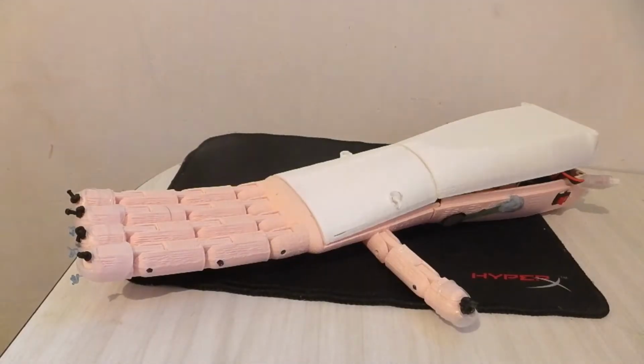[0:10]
Hello Internet. Today I'd like to go over the construction of my prosthetic hand that I've been doing as a side project. So firstly we're going to have a look at the mechanics.
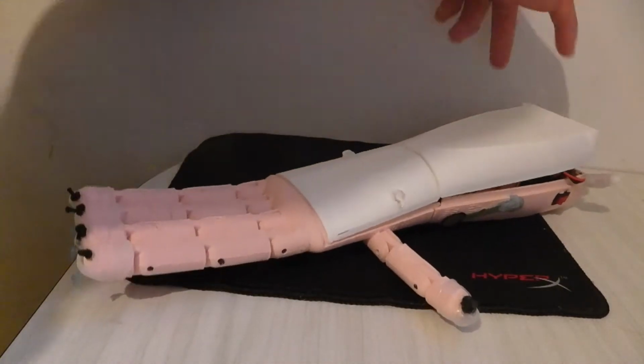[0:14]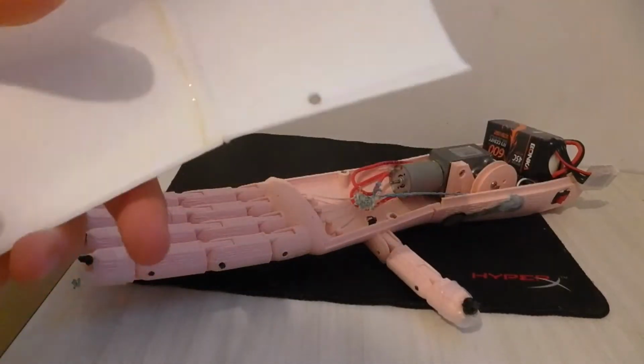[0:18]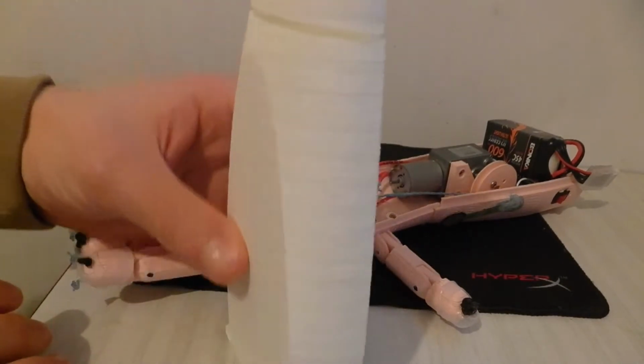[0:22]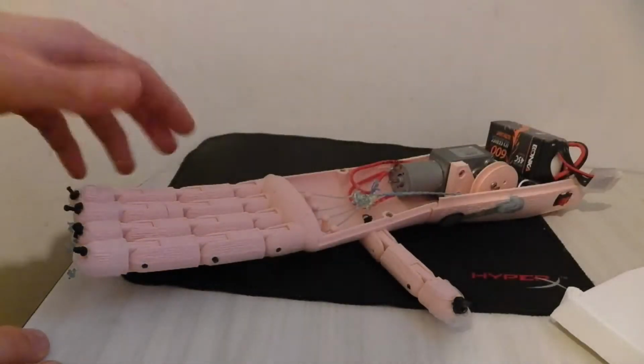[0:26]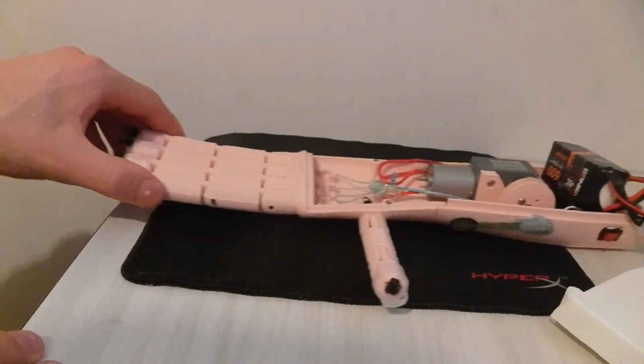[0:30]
Alright, so in terms of the mechanics, normally this lid is screwed on in 4 places. The lid itself is just glued together, 2 3D printed pieces. It's designed to be printed upright, no supports. Inside the hand we've got 2 main parts, the body and the fingers here.
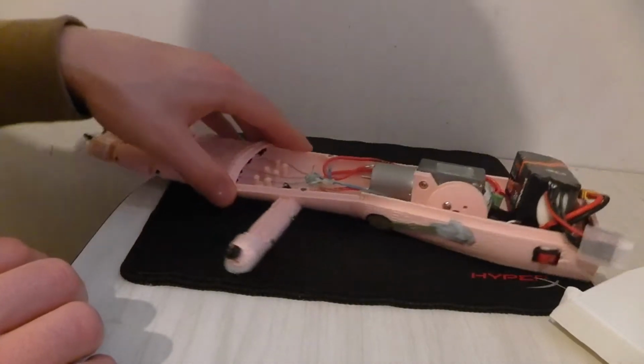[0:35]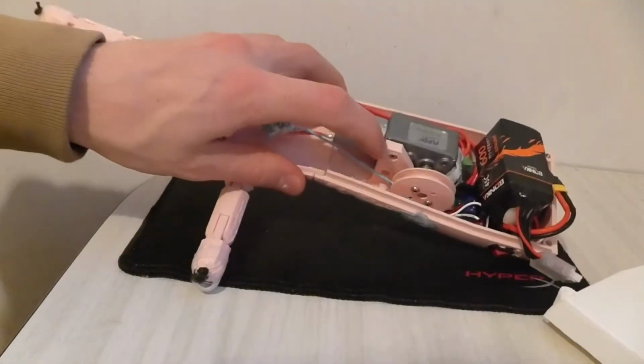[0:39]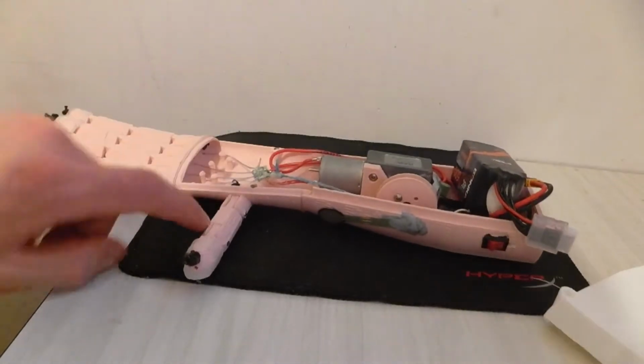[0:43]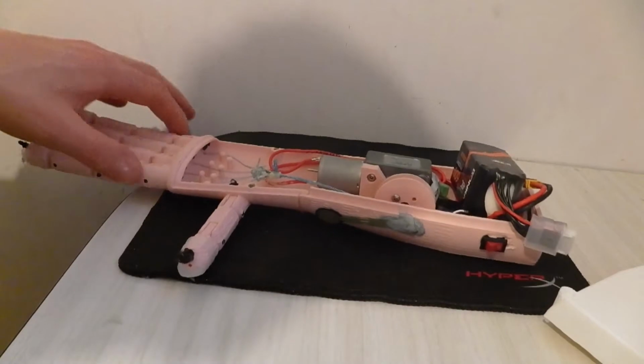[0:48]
Now we'll probably start with the body, that's the simplest. That's just a nice shell. It's got this motor holder here in it. It's got some holes. There's a hole here to help you with assembly. And then these finger stubs here which lead to the fingers.
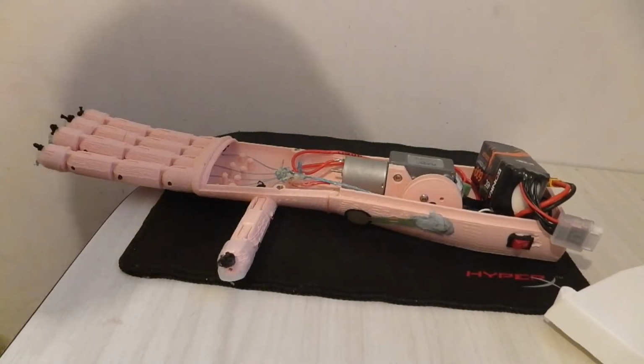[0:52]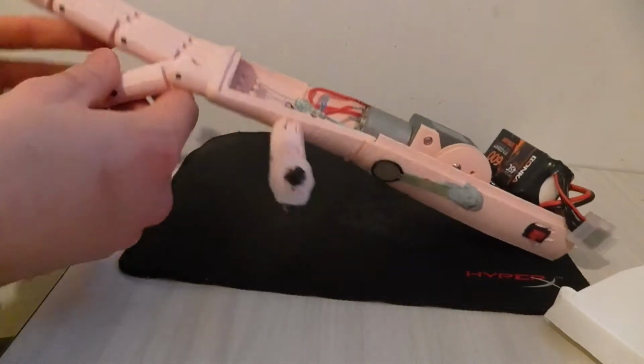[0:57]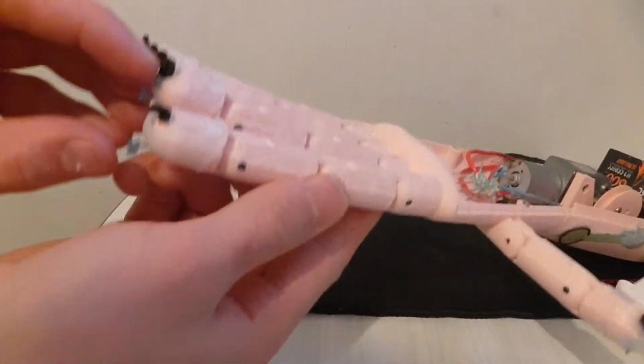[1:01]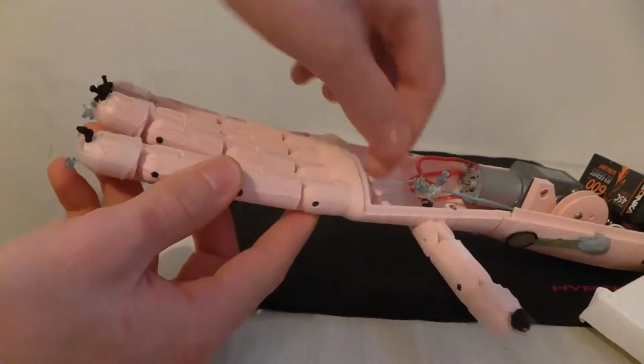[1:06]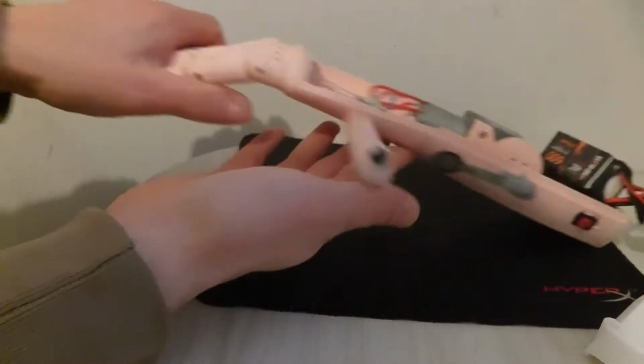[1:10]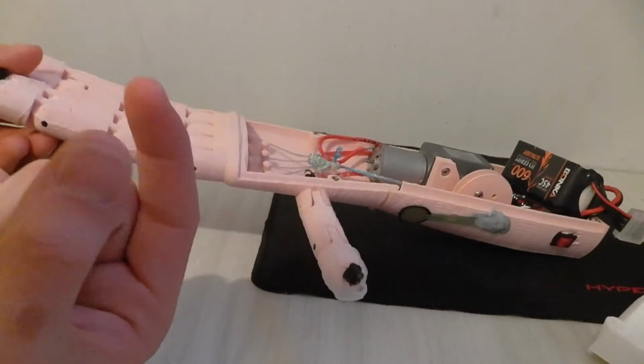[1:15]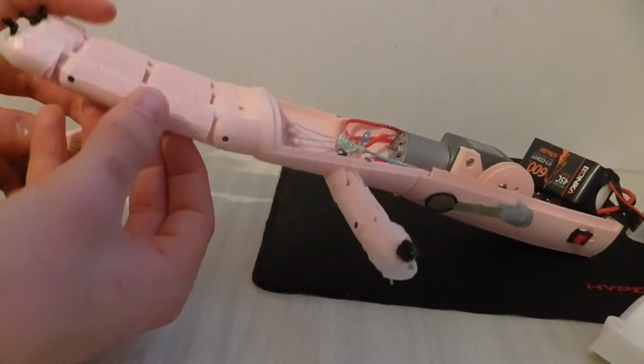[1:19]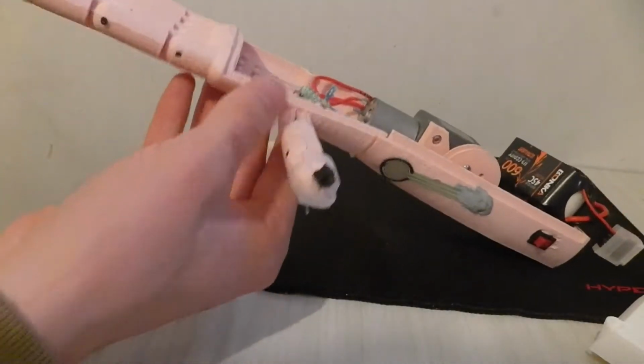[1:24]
Now mechanically the fingers have 3 joints with a piece of elastic going through the top. It's just elastic cord, and to the other side here, you can see in there. The joints are actually just 3mm holes with 3mm 3D printer filament pushed through. You can see here, and that works really well actually. It's quite easy assembly, and the elastic keeps the finger straight.
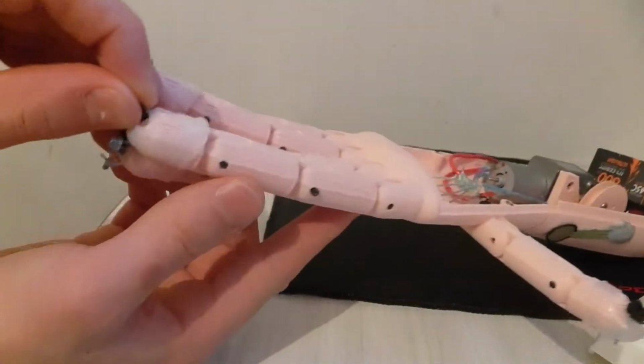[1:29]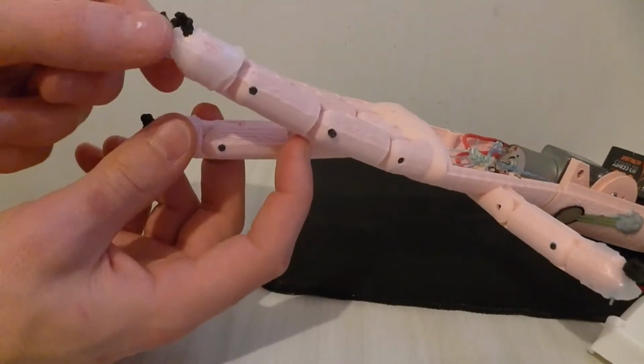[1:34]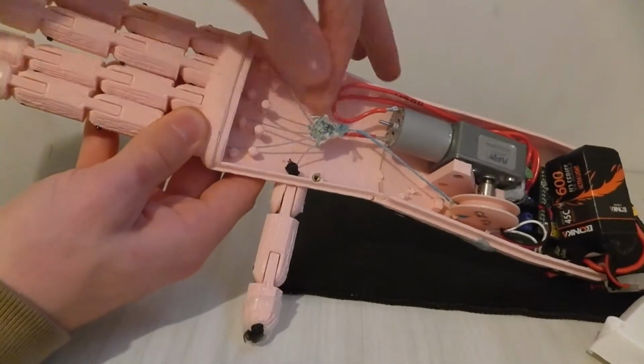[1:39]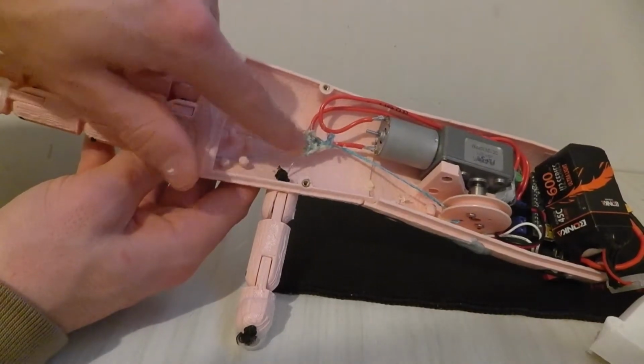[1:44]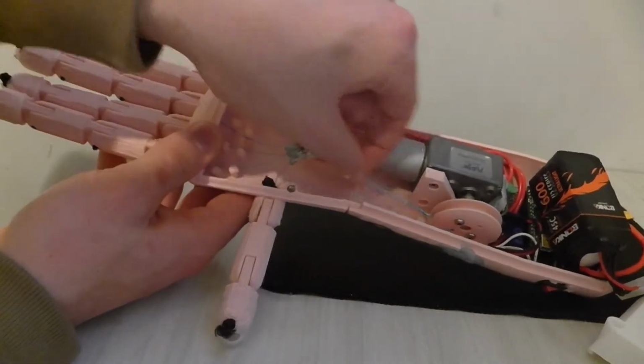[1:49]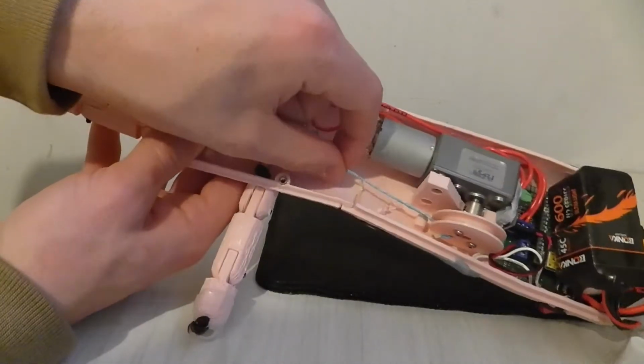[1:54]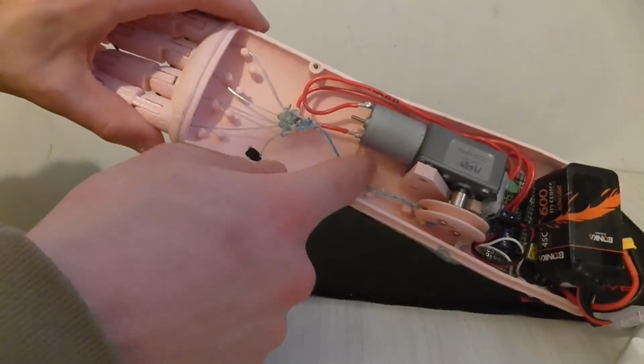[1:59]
So this elastic goes over the top of the pin joint, and then below it is another hole all the way through the finger with fishing line. These fishing lines go all the way through, and they all connect at a central nut here which has got glue on it to stop the fishing line from slipping. We have the 4 or 5 fishing lines connected to the nut, connected to another piece of fishing line. This is braided fishing line. It has to be braided to be stronger because this has 5 times the force of these fishing lines here.
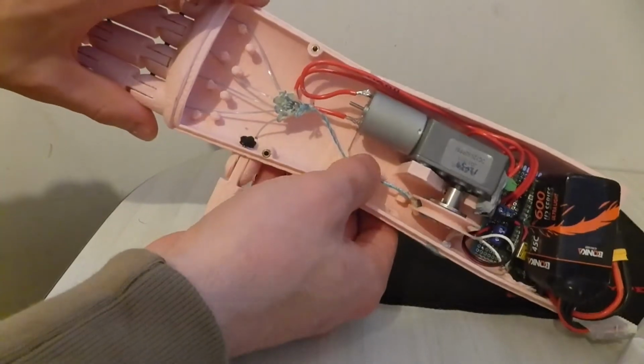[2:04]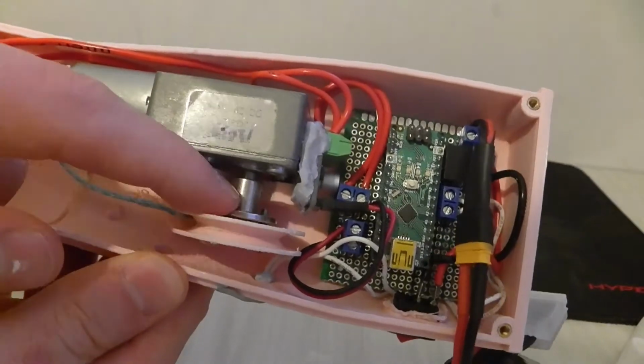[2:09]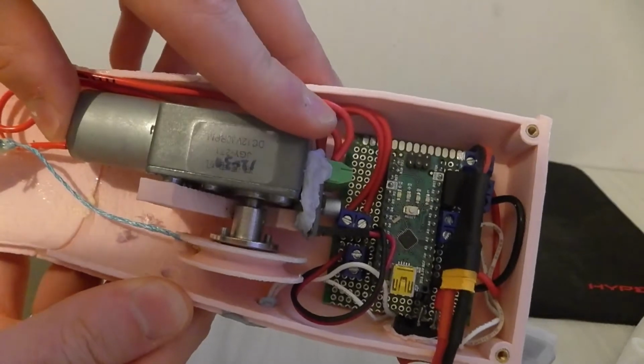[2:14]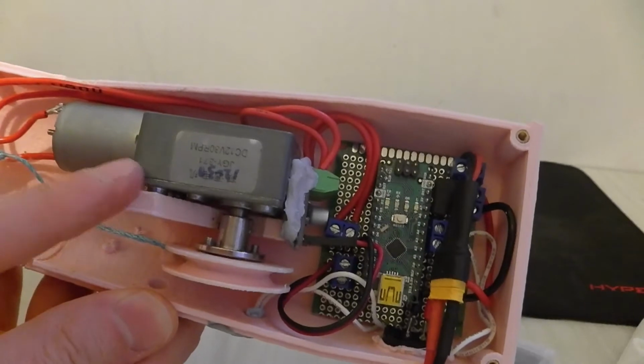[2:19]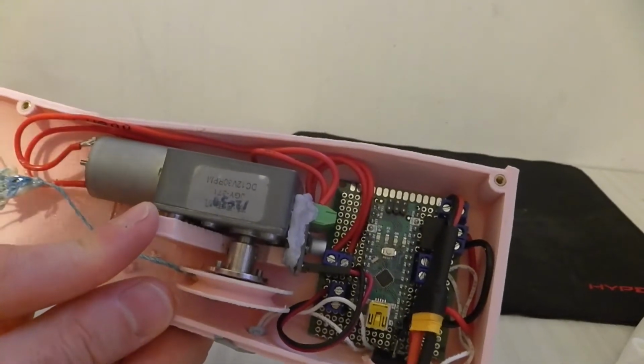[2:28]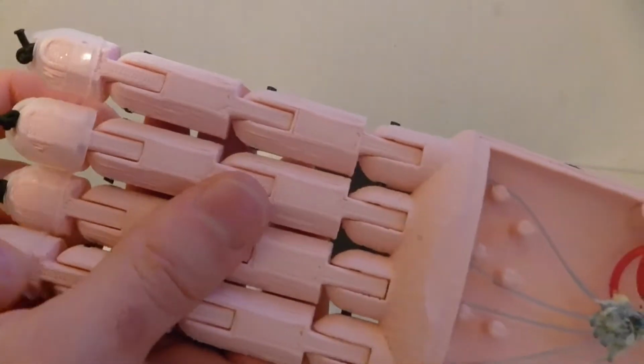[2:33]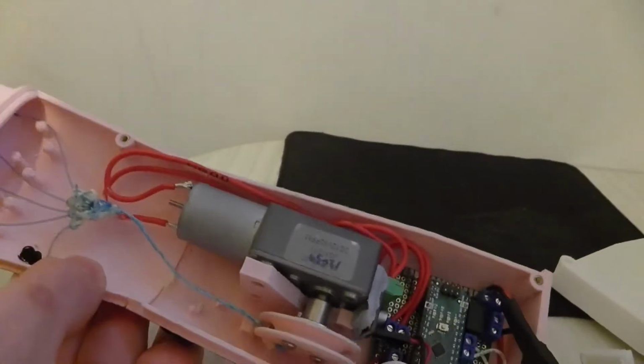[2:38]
That goes into a pulley which is connected to a coupling which is connected to the shaft of a high power worm gear drive motor. This is a 12 volt DC worm gear drive that runs at 30 RPM, but we're actually running it at 24 volts to get more power. And as you'll see at the end, this gives the hand a lot of grip, including the rubber fingertips it's got on it. It performs really well. Now that's probably all the mechanics.
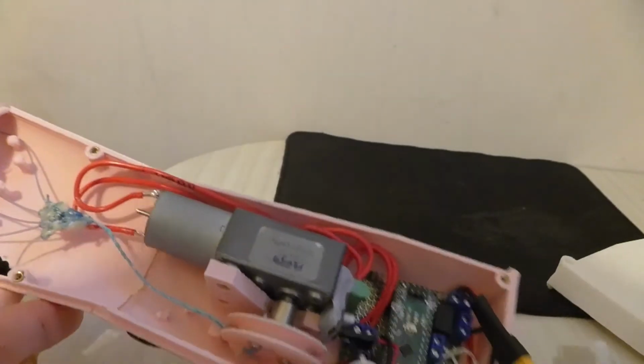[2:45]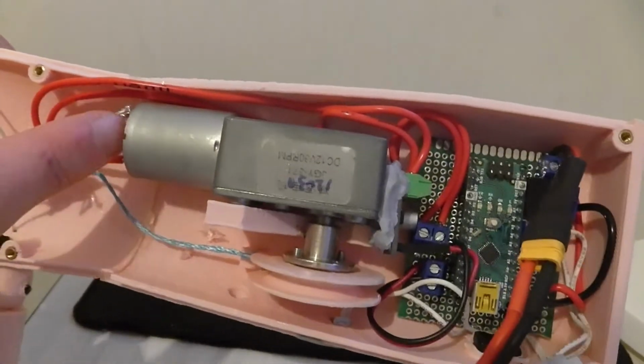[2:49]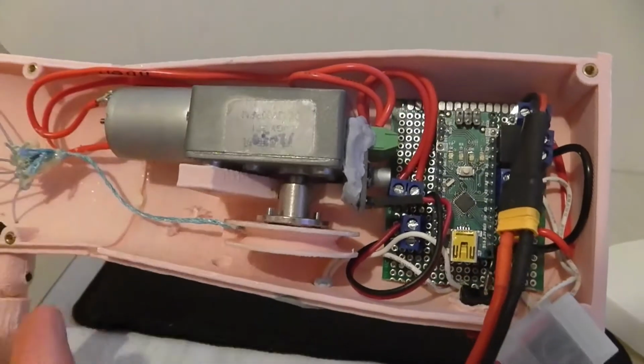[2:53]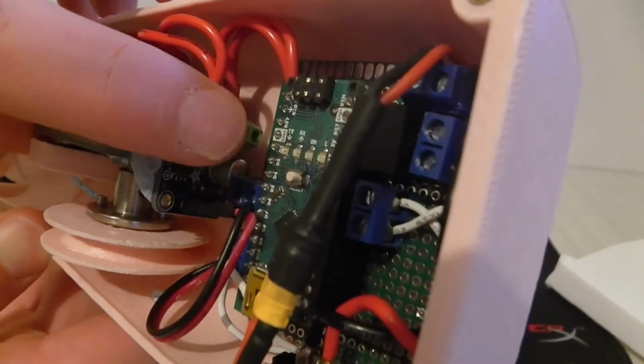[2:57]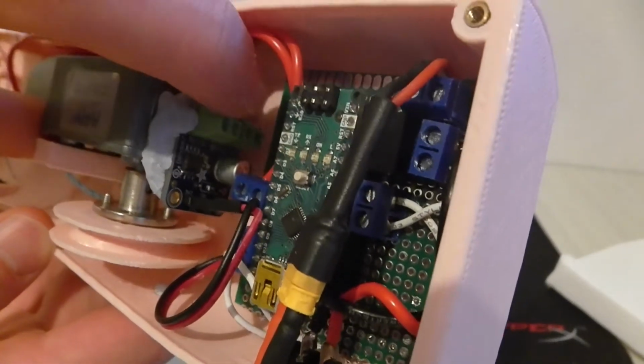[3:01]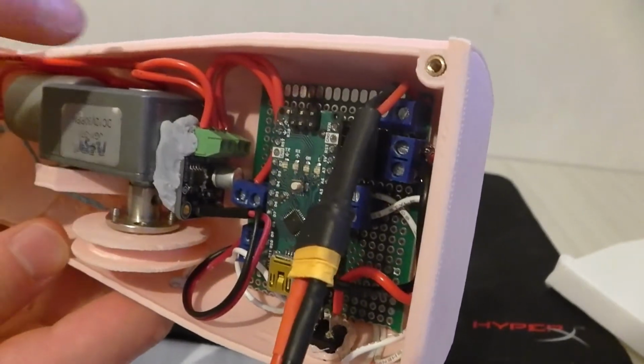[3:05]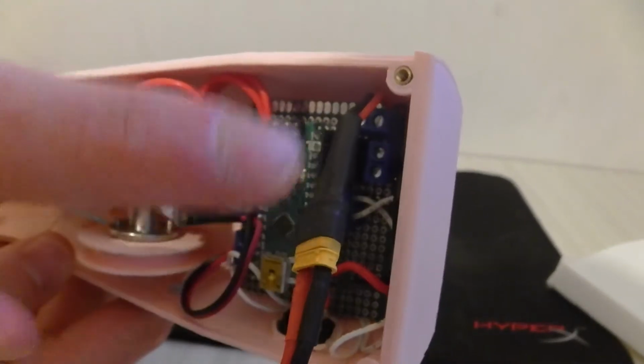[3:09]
I guess we'll go and have a look at the electronics now and how the electronic circuit works. Alright, so picking back up with the electronics, you can see that we've got the 2 wires from the motor that come and wrap around here, and these go into the PWM driver. This motor driver here is controlled by PWM signals that come from the Arduino, but it actually takes its power straight from the 24 volts.
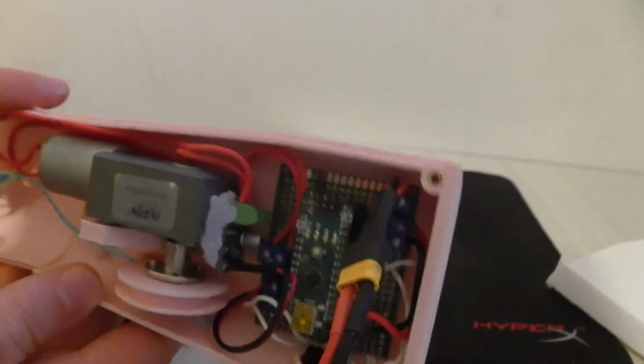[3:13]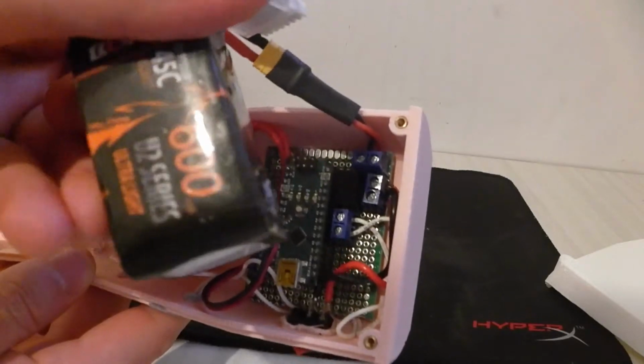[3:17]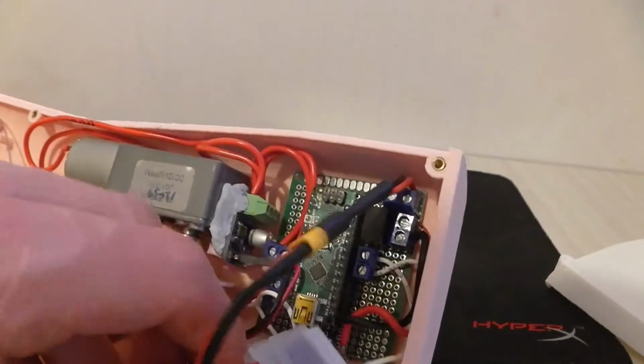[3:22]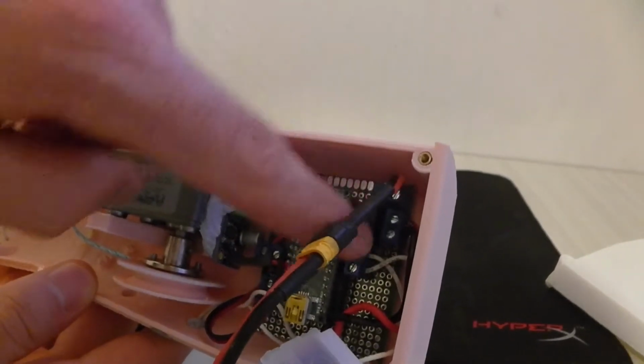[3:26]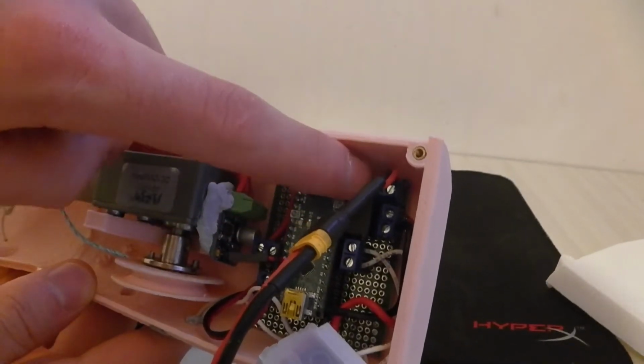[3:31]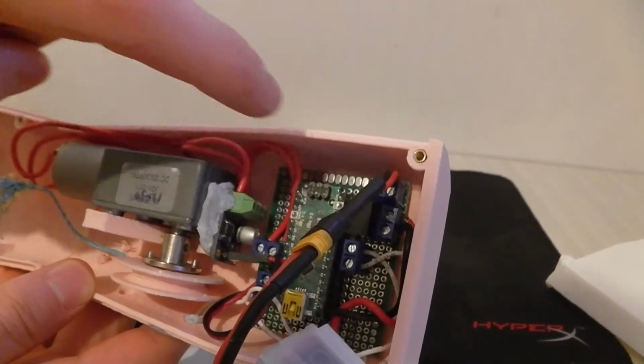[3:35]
So this motor is running on 24 volts. So this is a 24 volt battery, by the way. Nice small compact 24 volts, 600 milliamp hour. So the 24 volts comes into the circuit here. 24 volts goes to the driver, but we also have a 5 volt regulator here, and that regulates power for the Arduino, and the Arduino also gives that 5 volts in the form of PWM to the motor driver.
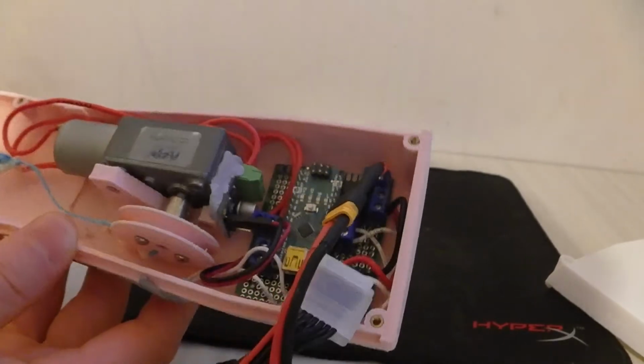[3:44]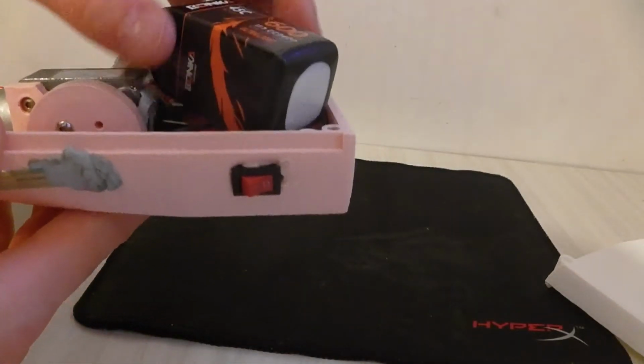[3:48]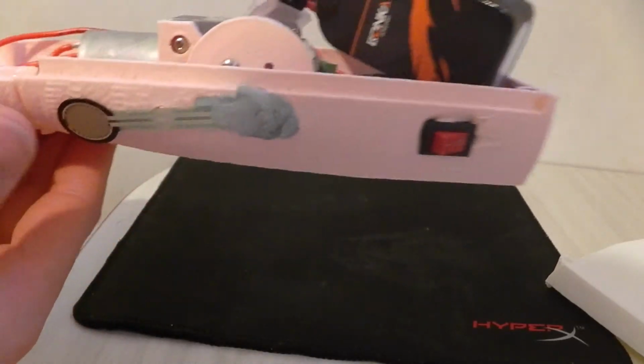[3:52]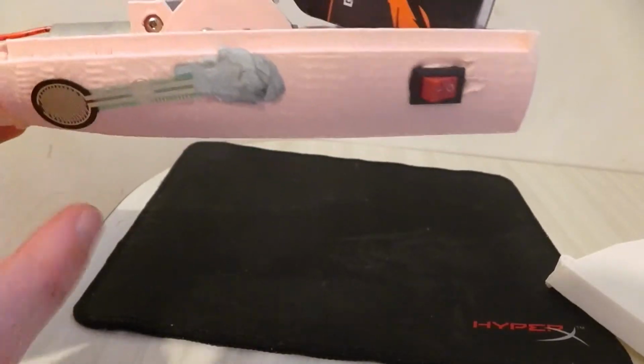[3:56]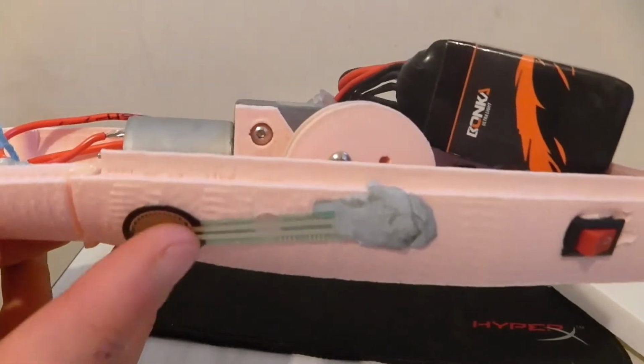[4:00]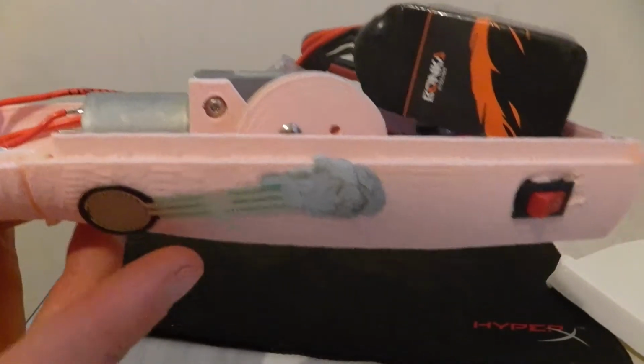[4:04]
Now to control the whole circuit, we have an on-off switch here which just literally switches the battery completely on, completely off. And we also have this force sensing resistor which talks to the Arduino. So this is used in combination with a pull down resistor, so when you press this, the Arduino knows to close and open the hand.
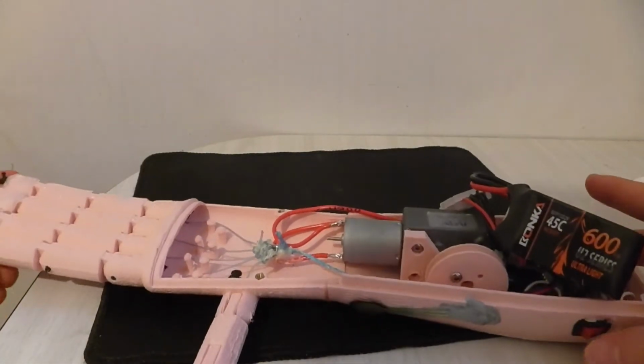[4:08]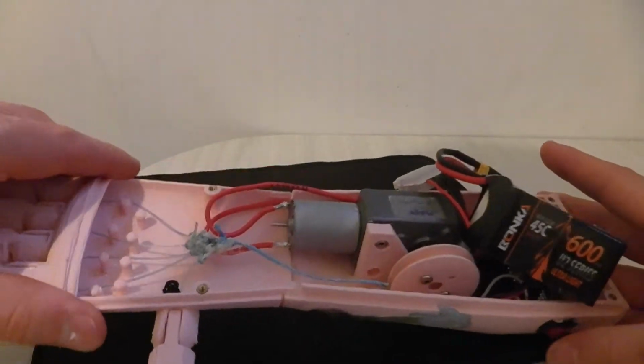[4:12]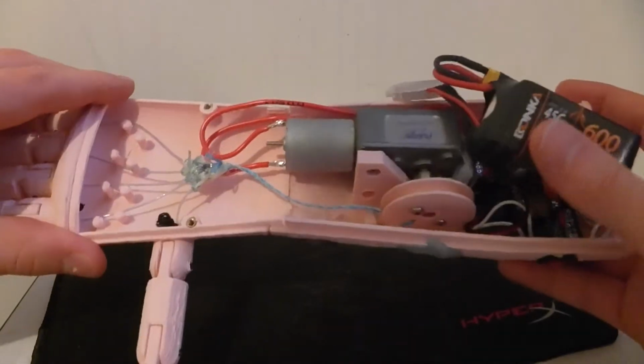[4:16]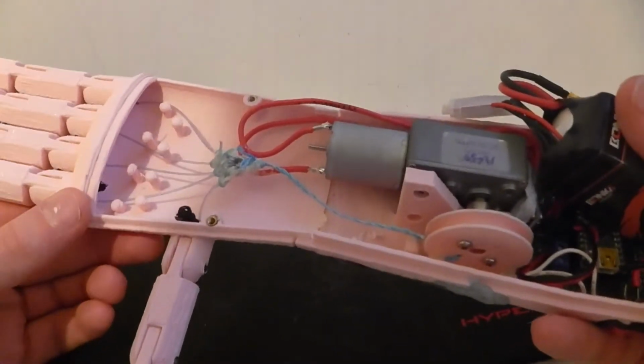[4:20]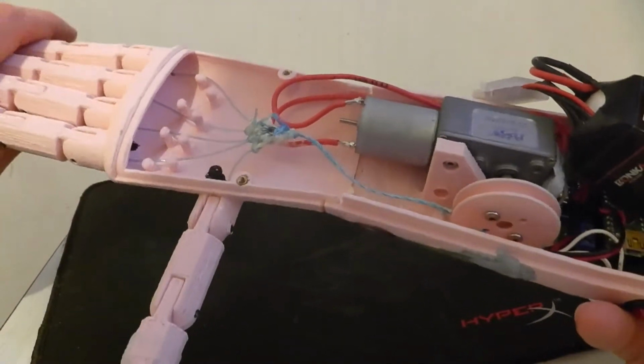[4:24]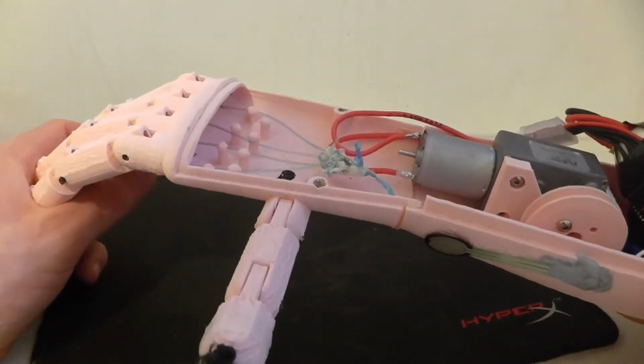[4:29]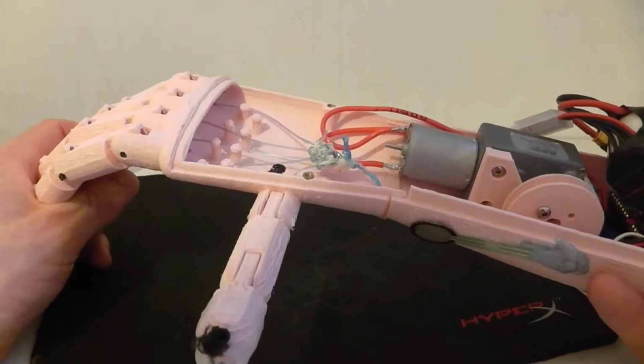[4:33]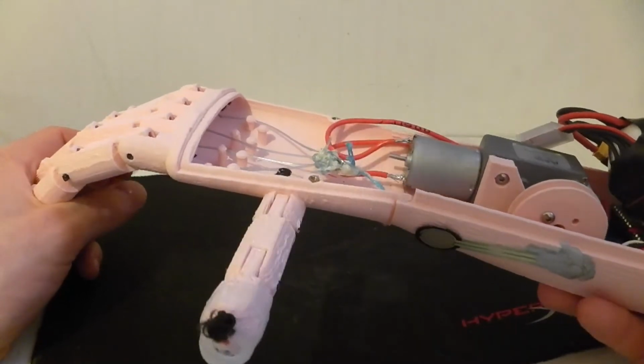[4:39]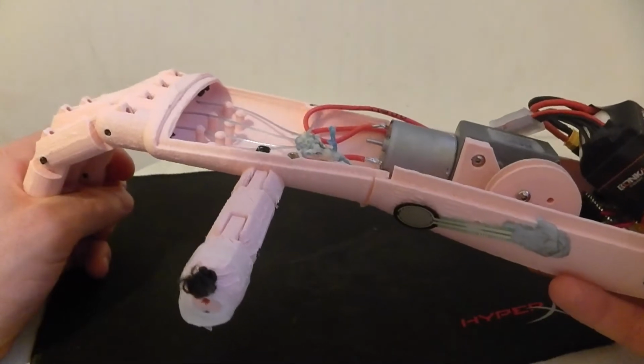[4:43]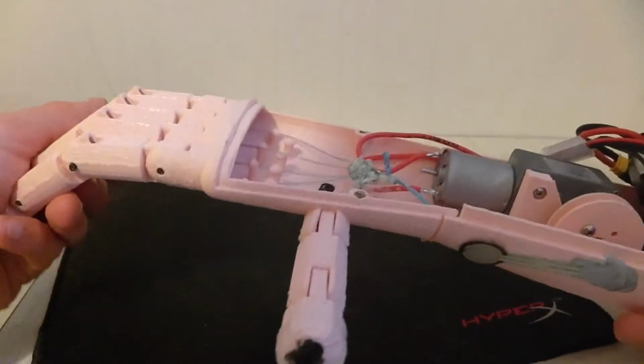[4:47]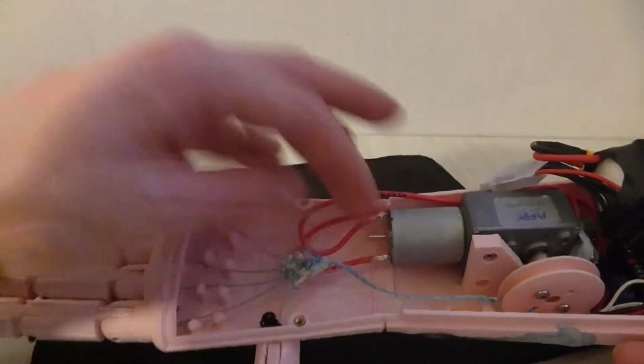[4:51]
Alright, and now in terms of its actual operation, what happens is, to keep everything in sync, when it turns on, it'll fully close the hand as far as it can go, and then it closes on a timing sequence, so it just knows how long it takes to close. So if the hand is stopped before that, it'll just keep trying to close, and then what will happen is the motor driver will switch off power completely to the motor, but because it's a worm gear drive, it will actually hold that tension. And then what happens is, in the opening sequence, it then opens the correct amount to be fully open, so the pulley will be sitting at the right spot, and then these elastics will hold the fingers straight out.
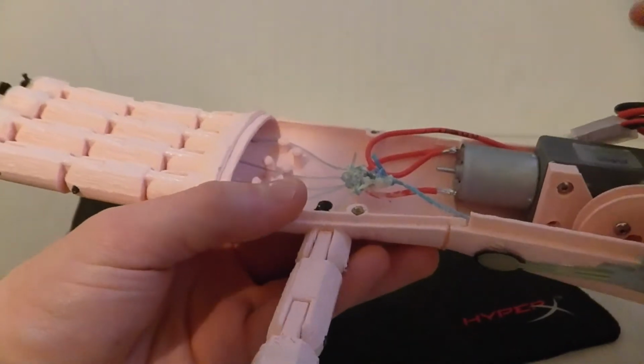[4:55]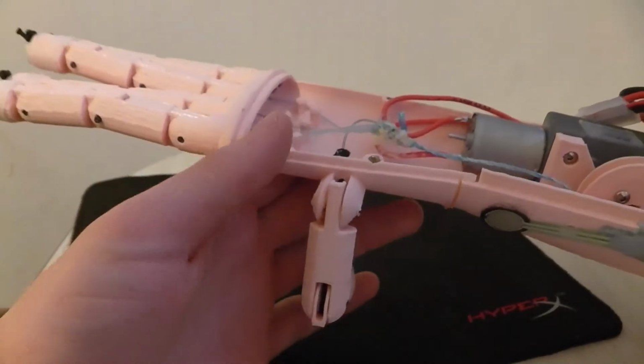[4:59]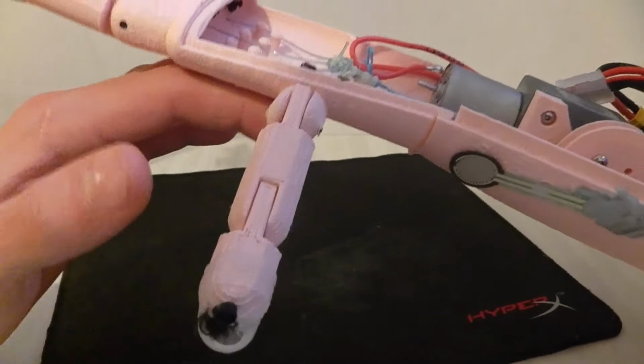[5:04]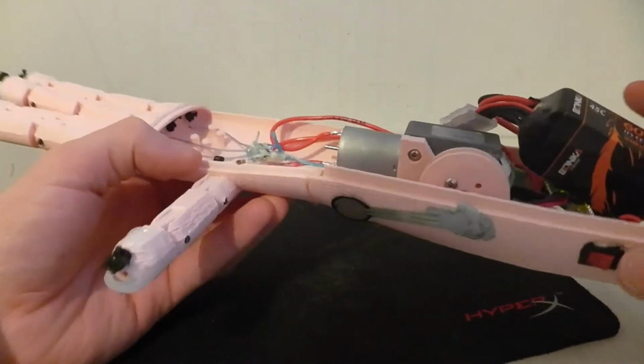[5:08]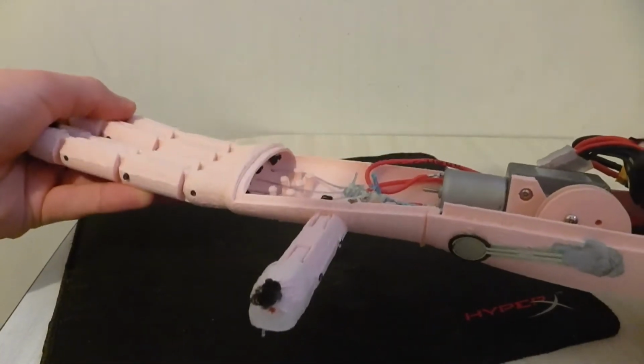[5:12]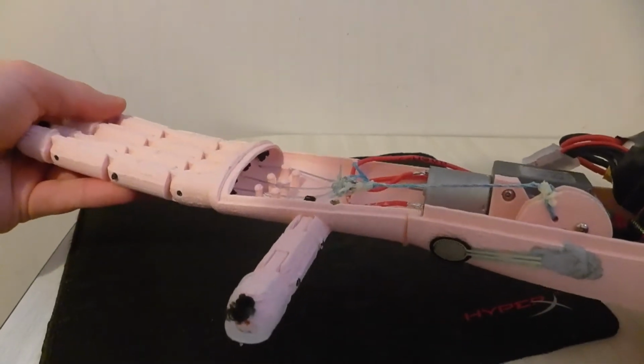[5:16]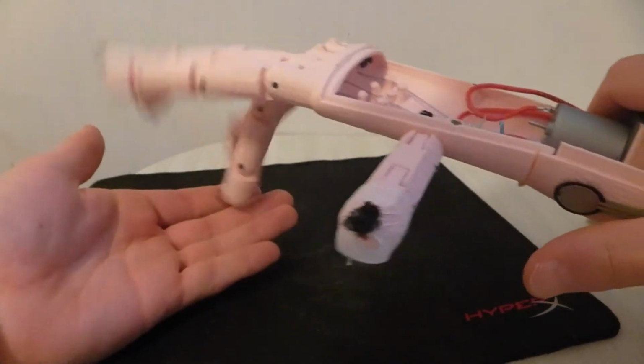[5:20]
So I'll just show you that now. The thumb right now, the elastic's not strong enough to pull it back, so you'll just see the thumb hanging around. But yeah, that should be easy to fix. And I'll just show you that again with holding the fingers closed. Oh, open, sorry. Yep. And then each time I press it, it just goes in and out.
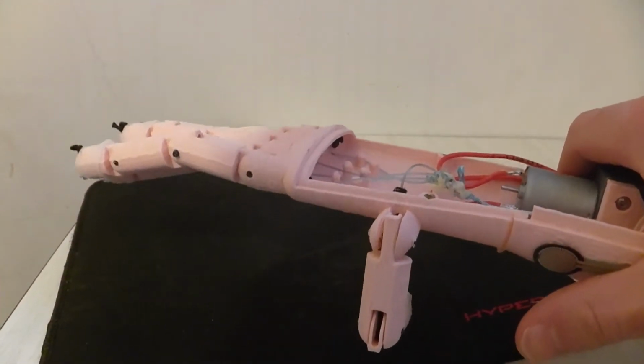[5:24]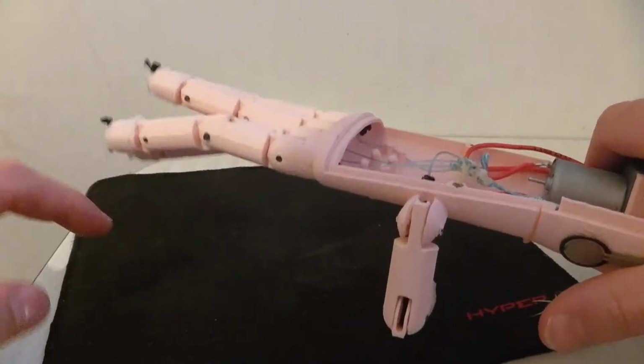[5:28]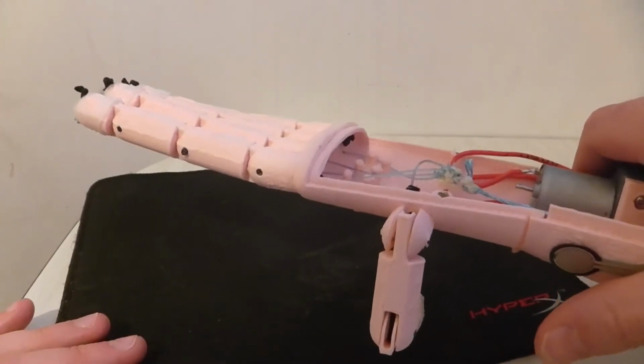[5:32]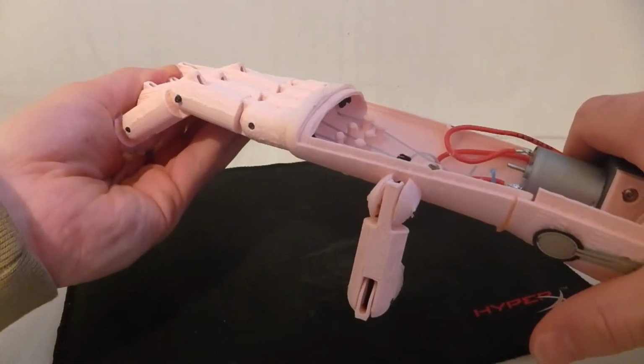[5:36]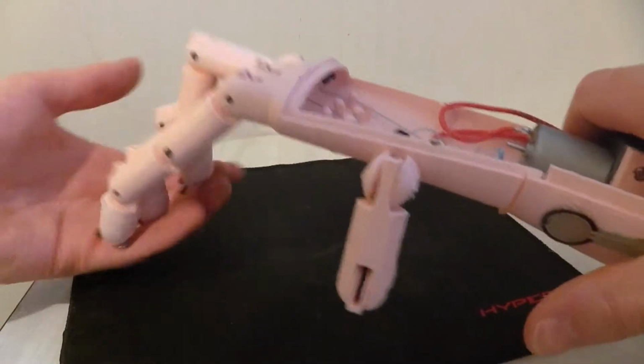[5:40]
And the reason it will never go out of sync is because it closes for about twice as long as the timing for it to open. So it'll always get to a point where it's just stopped and forced, and then it will just release and you press it again. But yeah, the beauty of this system is it requires no power to hold this grip now.
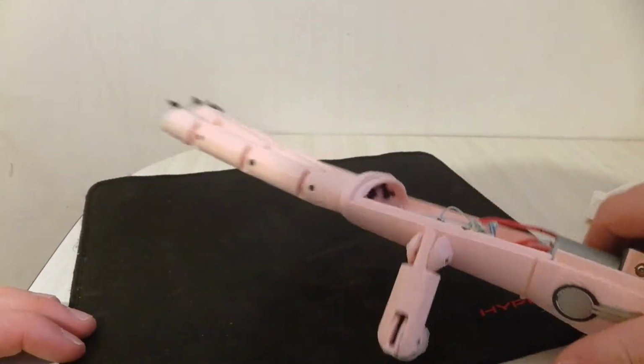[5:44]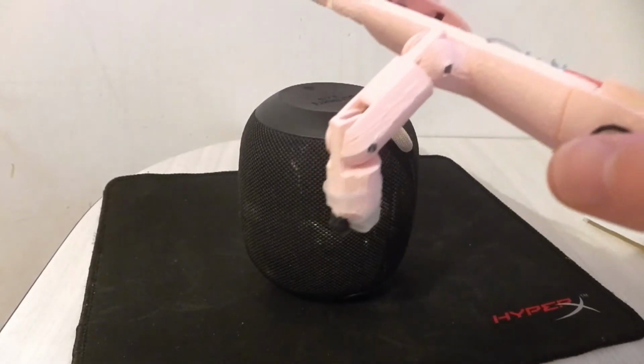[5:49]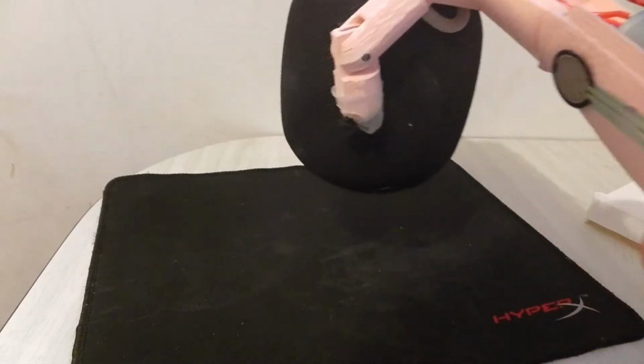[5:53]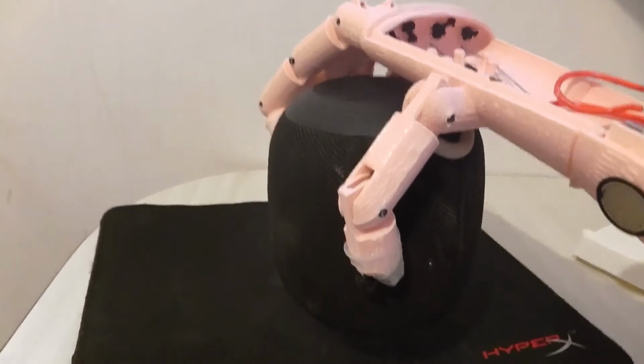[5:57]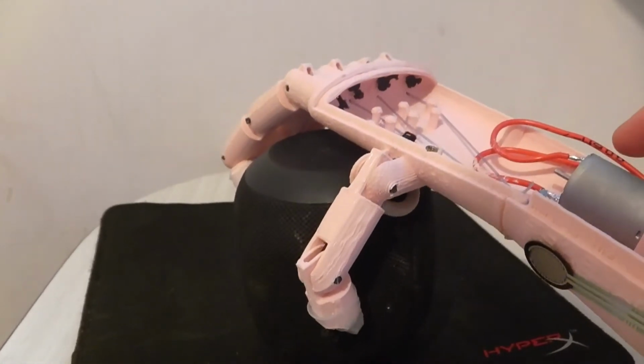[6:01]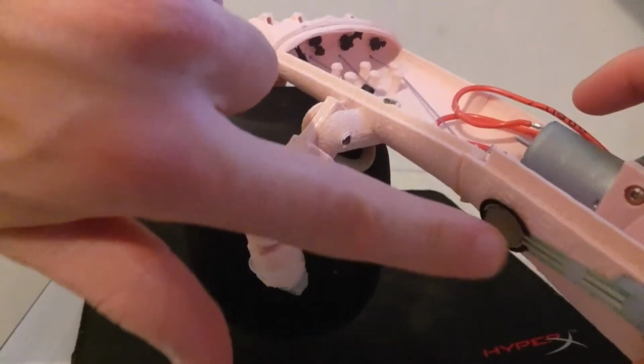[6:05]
Yeah, so I'll just show you picking up this speaker here. And yep, now it's locked on, that's it. It just requires no power to hold this all day, which is just the beauty of the worm gear drive. It won't be driven backwards. It can only be driven from the input, which is only controlled by the electronics. To drop it, just hit this button, and we're good.
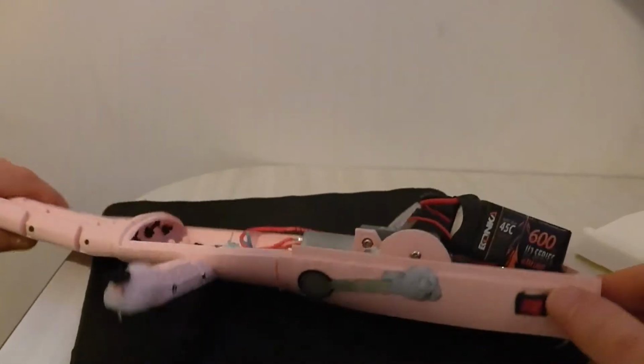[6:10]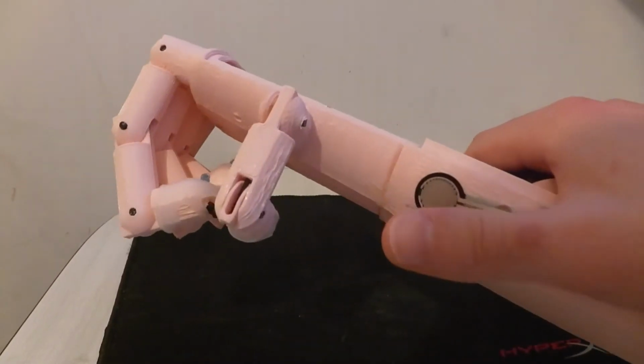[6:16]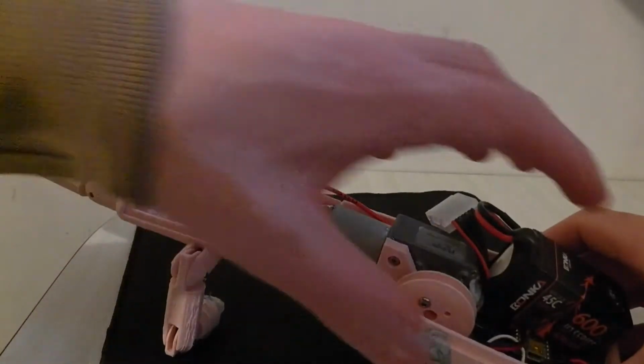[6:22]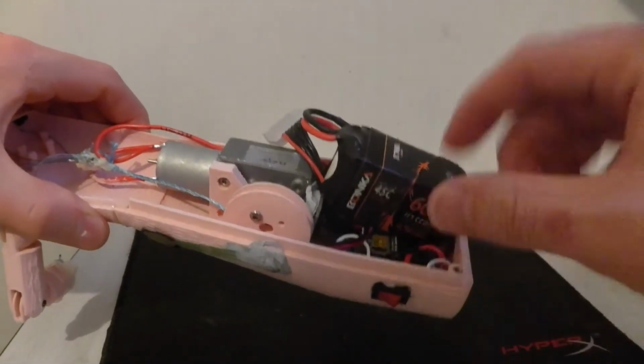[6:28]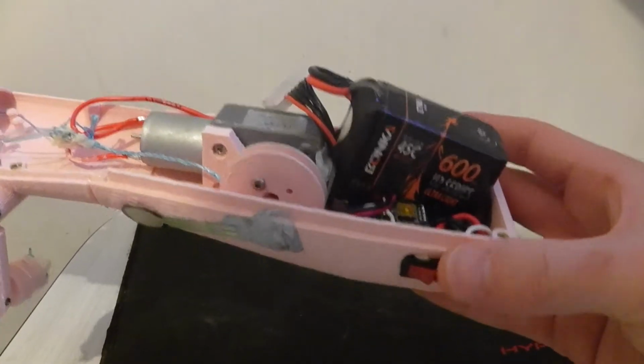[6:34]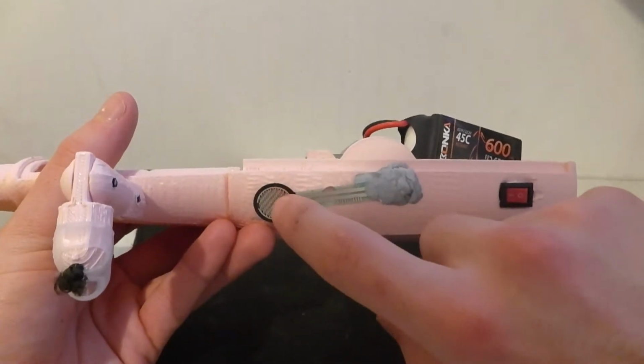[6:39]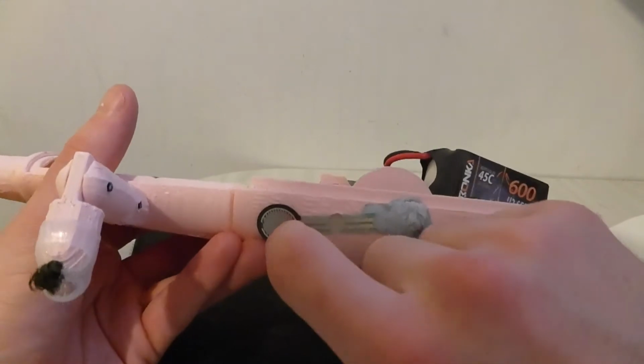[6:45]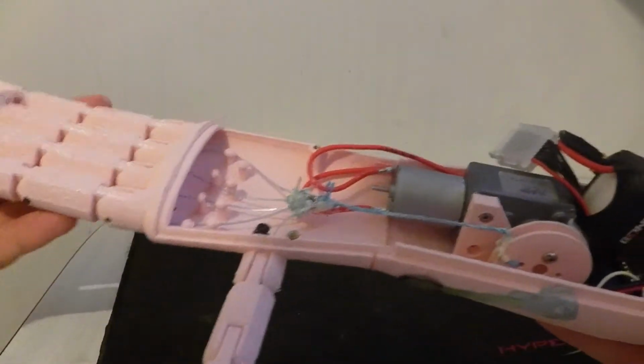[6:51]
And just one thing I wanted to mention with the force sensing resistor, you'll see me holding the hand and touching it like this to use the hand. But in actual fact, if this was used in a real prosthetic, the goal would be to move as much of this electronics and motor up into the hand to leave space for another piece, which would be basically the interface between the plastic hand and the person using the prosthetic. And this would slip between that plastic interface and their arm, and the hand would actually be controlled by them flexing their forearm muscle, which would put pressure on this, and you can see it's very sensitive, and that would operate the hand. So it would be very natural control.
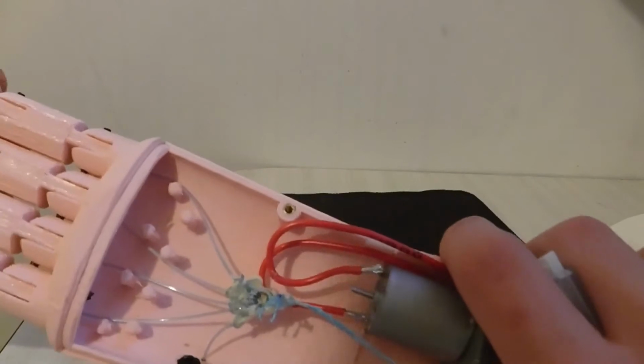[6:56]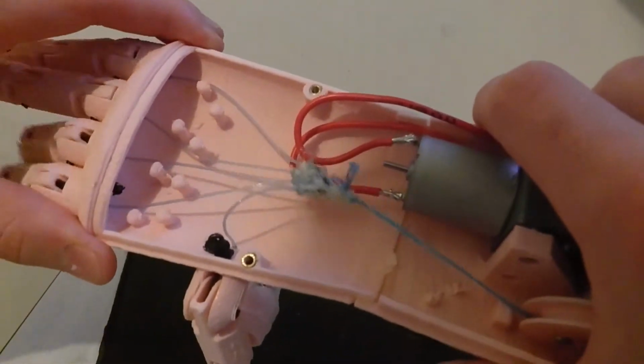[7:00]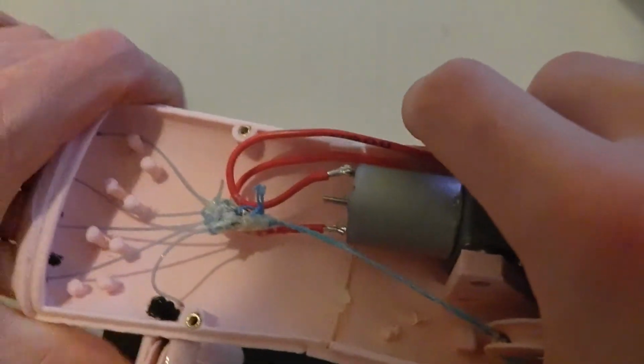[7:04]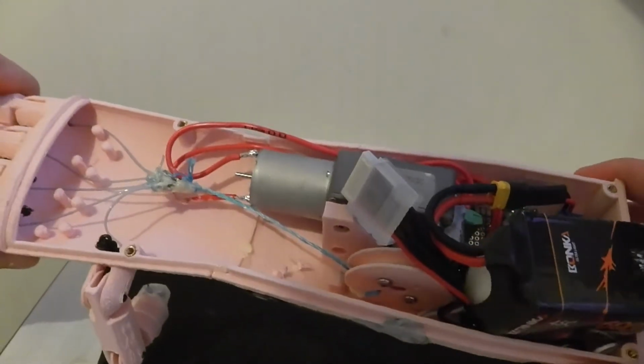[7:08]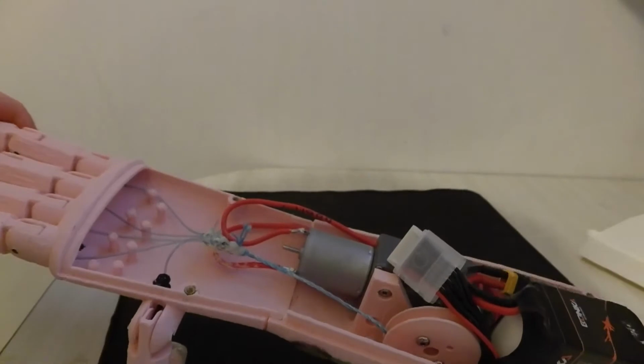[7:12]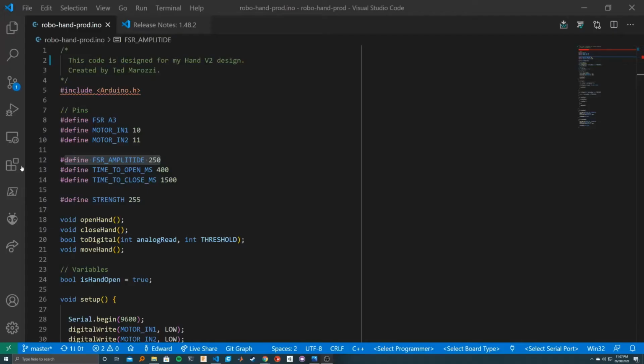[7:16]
And I'll just give you a close-up of the fishing line closing. And that just holds that, and then yeah, so it's turned out to be a very reliable system. I'm very happy with it. The last thing to go over is the software, so we'll have a look at that, and then I'll give you some things I would improve for the hand, and if I made another version.
Alright, we'll just go over the code now. It's only 80 lines, nice and simple code. We have 3 defines here to define our pins. We have a FSR amplitude define, which determines how much force is needed when you press the force sensing resistor to close the hand. We've got how long it takes to open the hand, how long it takes to close, and the strength of the hand, which is an integer from 0 to 255. So it's currently set at the maximum strength, which you could set to any strength you like.
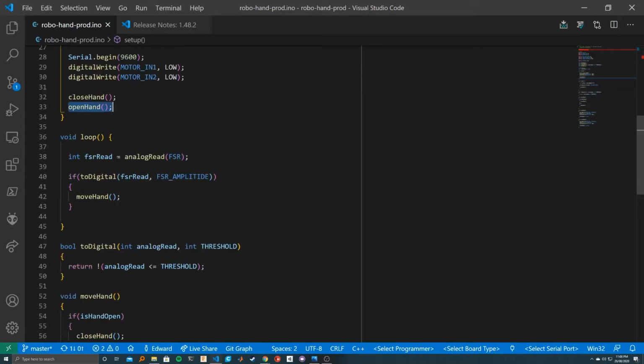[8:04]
We've got our functions here and a bool that tracks whether the hand is open or closed at the moment. So in the setup, we set our 2 motors to low just to start the process, and then we close the hand, and then we open the hand, and that's part of the calibration process. In the loop here, we read the value of the force sensing resistor. We take that to a function that determines basically whether the force sensing resistor is lower or greater than the amplitude that we set here. That's why it's called to digital, because it just converts this analog signal to a 0 or a 1, depending on which amplitude you put in, and you can see that here. And then if the FSR value is greater than the amplitude that you set here, it will move the hand.
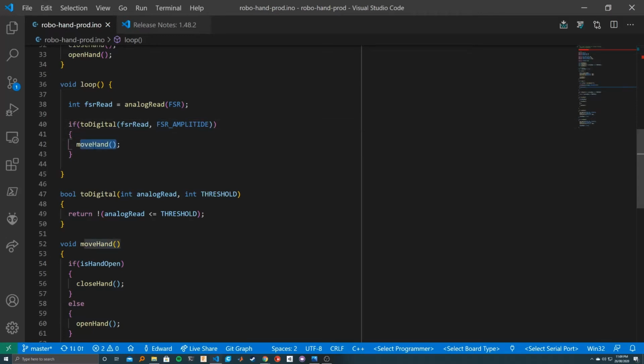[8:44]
Now, what does moveHand do? Very simple function. If the hand is open, we close the hand. If the hand is not open, then we must open it. To open and close the hand, I guess this is where the meat of the code is. All you have to do is analog write to whichever motor pin gives you the open direction. You open it with full strength. You have to wait for the time to open, and this will continue to open the motor during the delay. And then you set the motor low, and then you tell the hand that it is in fact open. And close hand is very similar, except it's the other pin, and it's time to close, and then you have to tell the hand it is closed. Yeah, so very simple code, that's all actually.
Alright, I hope that little walkthrough was informative. I'm just going to go over some things I would change now. This is the second version of the hand I've made, but if I was to make another one, which I probably won't, I probably would, a few things I would just optimize a little bit. See the fingers bend back a bit. It's because I gave the joints a bit of a tolerance, because I thought that the fit wouldn't be so good, I guess, but it turns out they actually bend up a bit, and that's kind of annoying to look at.
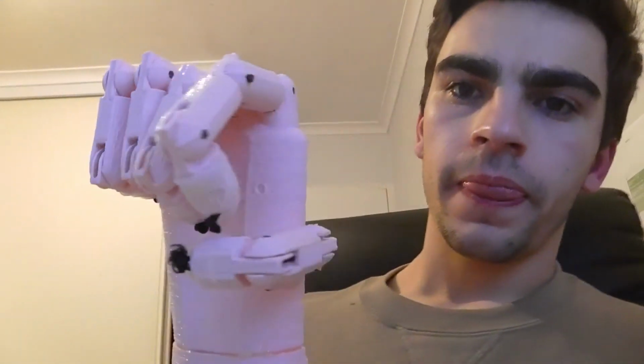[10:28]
Another thing I would change is I would make the thumb actually opposable. We can see here that the thumb is at a 90-degree angle, and that affects its gripping capability, because you can see it doesn't quite clamp down on the fingers with the thumb like you would when you hold something. So that's definitely an area of improvement.
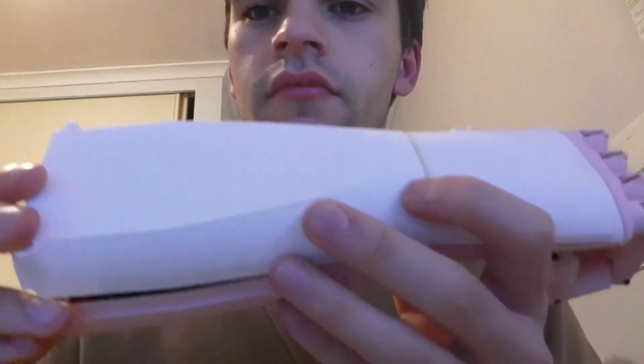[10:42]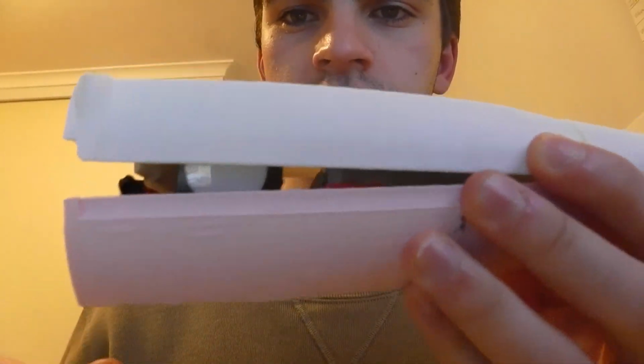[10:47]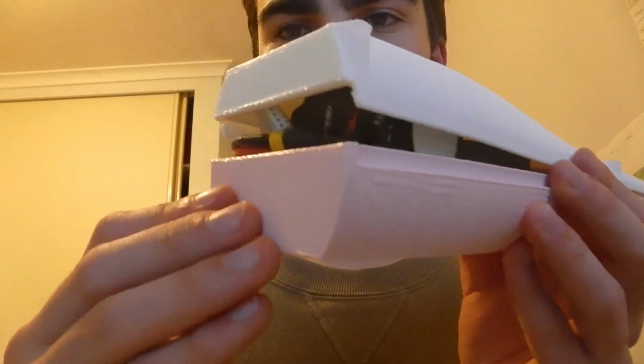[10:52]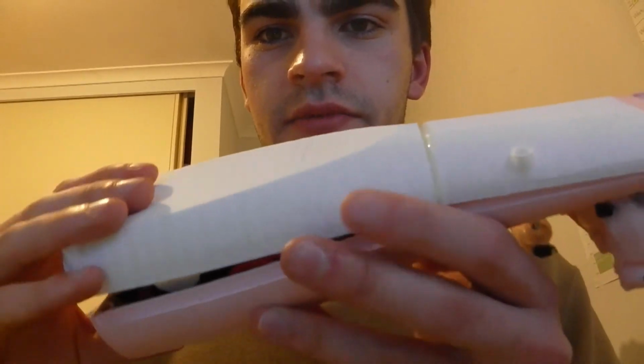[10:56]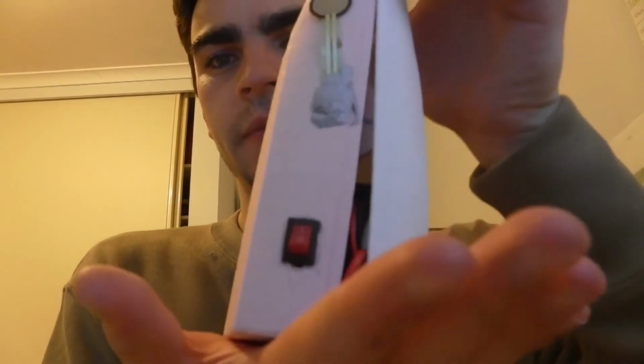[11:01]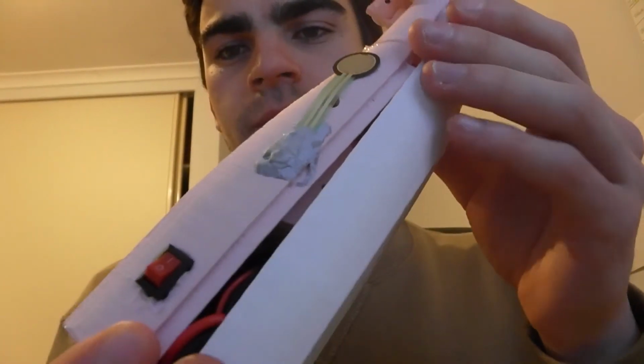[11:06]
Another thing I would fix is just making the battery bay bigger. See, if these were just rounded out to be circles, this would actually be able to close, but it's not able to at the moment. And the reason they started flat is because the original printing orientation was like this, but I worked out that it's way better to print stuff like this, so that required a bit of a hack to get working, but if I was to do it again, I would just design it from the ground up to be printed standing up. And that's pretty much the main things I would improve.
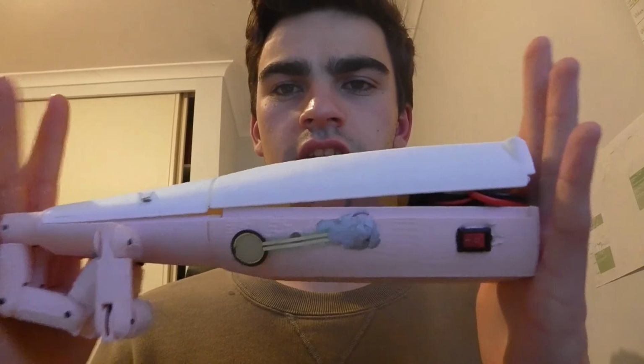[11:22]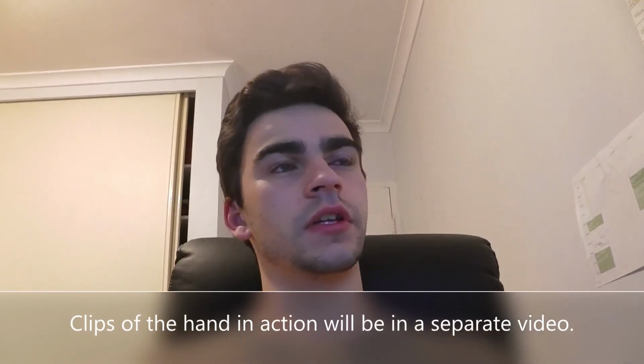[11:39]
And I guess another big thing would be to try and shorten the overall length of the fingers and the hand itself to attach an interface, which would just be attached through screws probably to this back here, which could actually join onto someone's hand to be a useful prosthetic. So it would be kind of cool if I ever want to pursue that. Yeah, now I'll just throw to some clips of it picking some stuff up. I think it turned out really well.